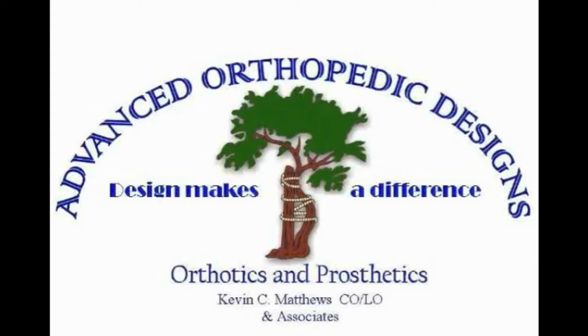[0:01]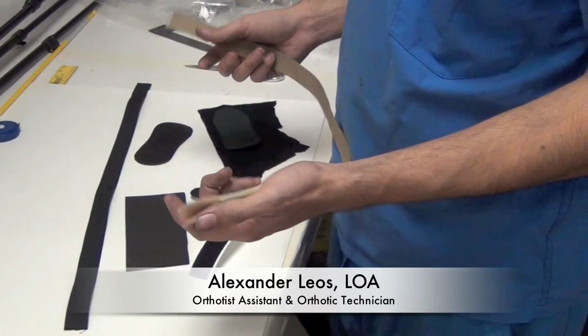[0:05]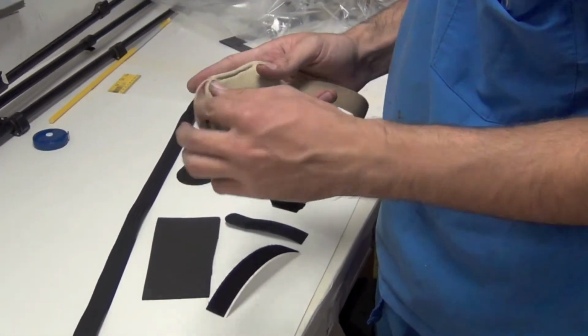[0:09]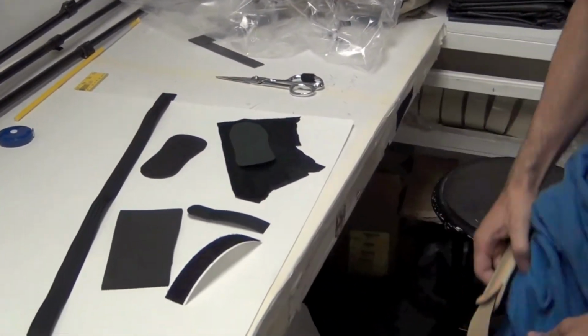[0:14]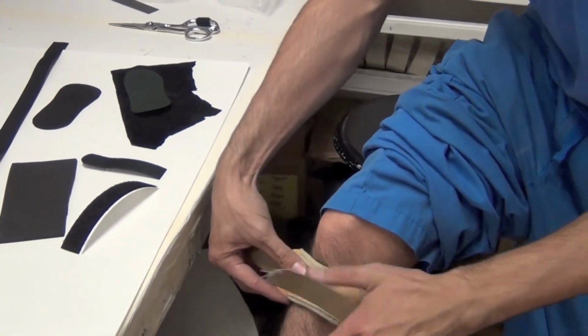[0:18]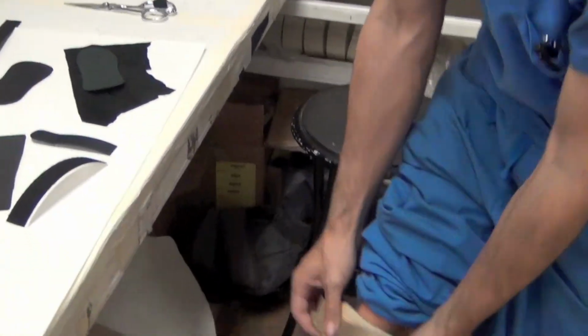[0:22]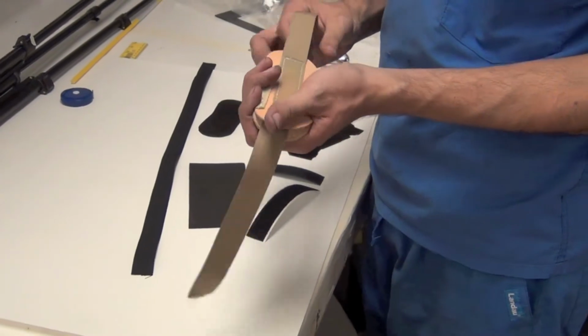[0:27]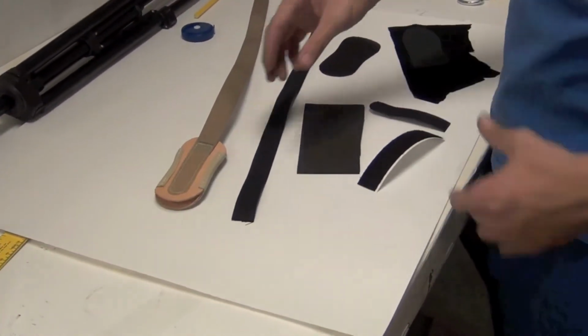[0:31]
This is an infrapatellar strap, which is pretty much what it sounds like. The patient will wear it under their knee, pretty much like that, and it'll wrap around the bars of the uprights, just to hold them in place. We use this instead of a knee strap, like somebody else might use a 4-pull or a 5-pull knee, big knee pad strap thing.
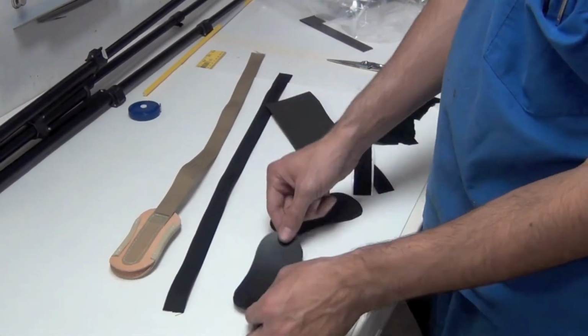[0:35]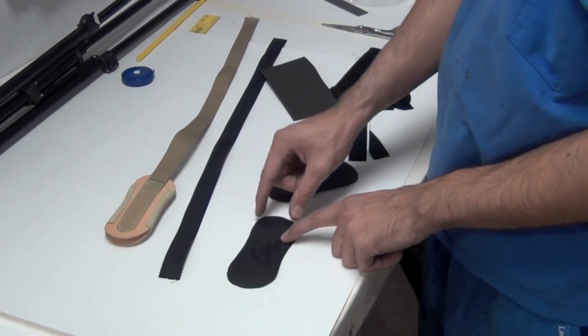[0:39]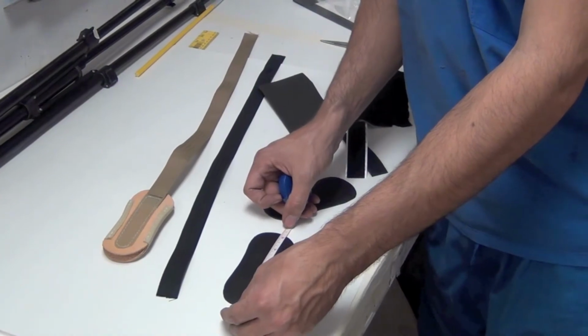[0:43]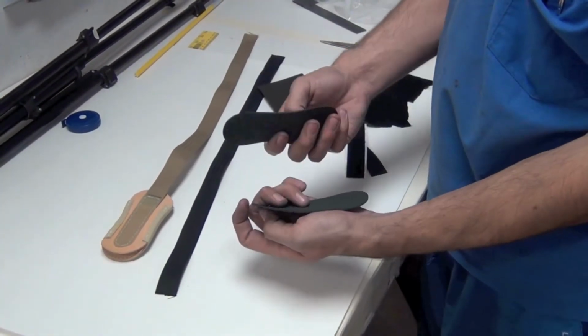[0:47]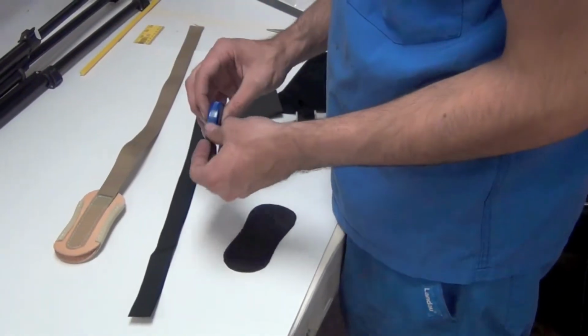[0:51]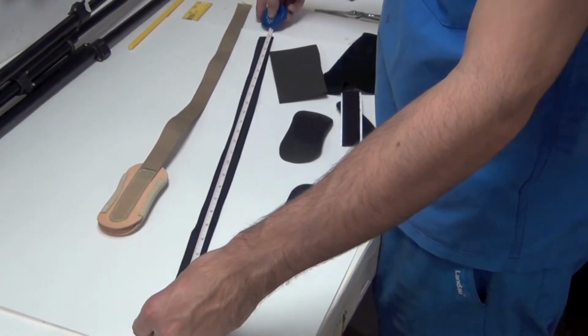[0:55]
I have a pattern for this, but this is the basic shape of it. And the pediatric ones are a little smaller, but this is the adult one. This is about 2.25 by 5.25. And I cut two of them out of just elk leather. I've got a piece of Dacron, it's about 25 inches long. And that should be long enough for pretty much anybody, your average patient.
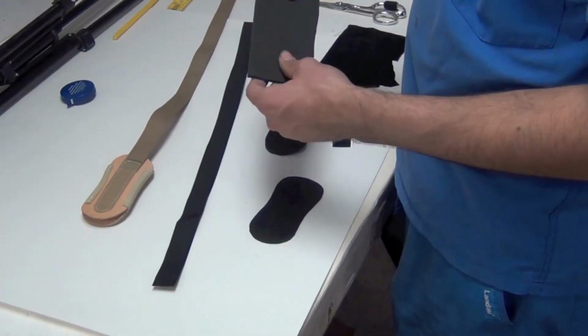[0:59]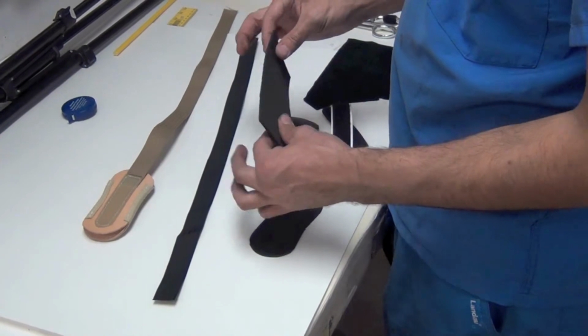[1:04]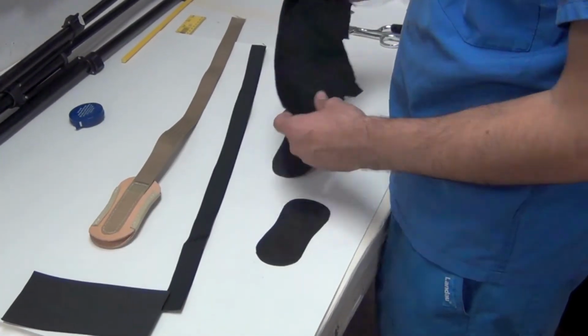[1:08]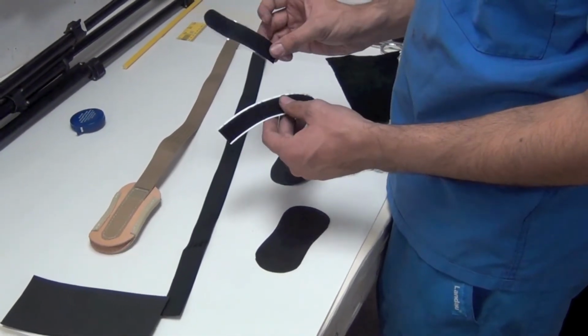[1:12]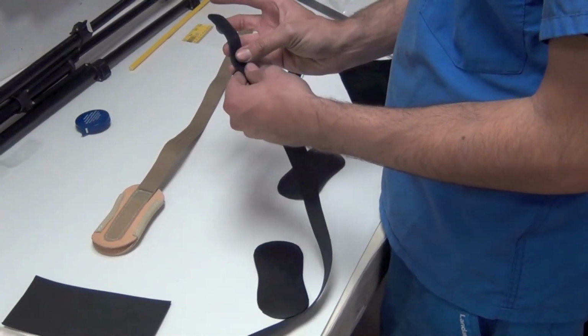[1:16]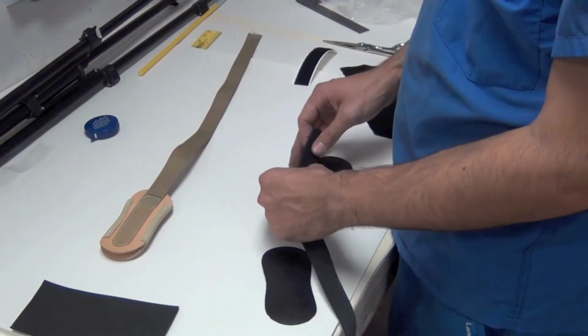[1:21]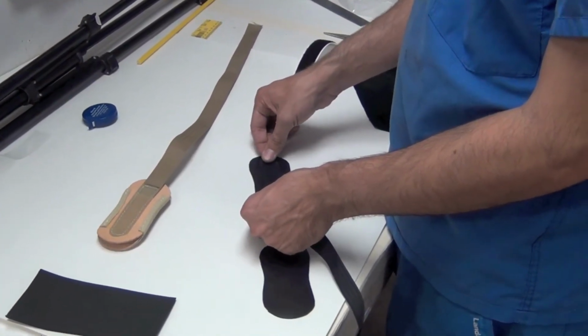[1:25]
I also have some 25 durometer EVA here, and that's 1/8 inch thick. I've got a piece of cowhide, some adhesive hook Velcro and loop Velcro. I'm gonna take the Dacron, put this hook on it, covering about 1 inch of it, and then I'm going to lay it right in the center of one of these, just like that.
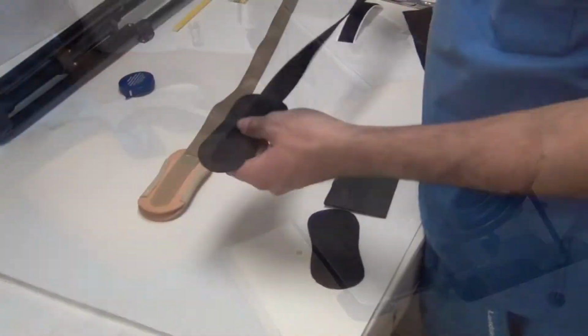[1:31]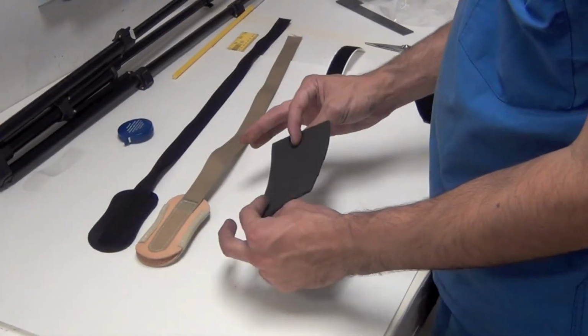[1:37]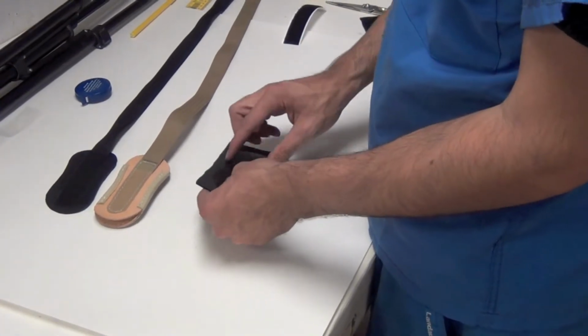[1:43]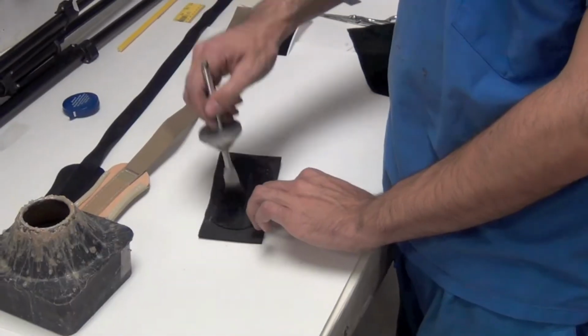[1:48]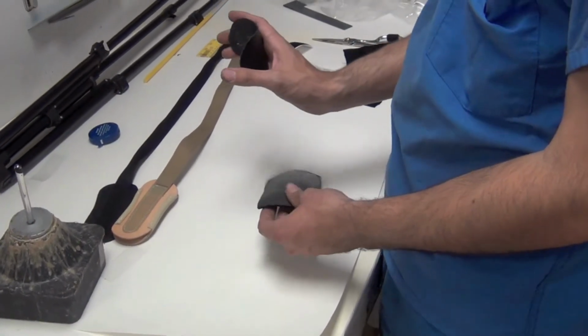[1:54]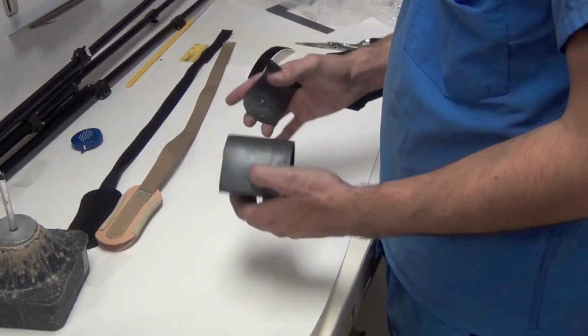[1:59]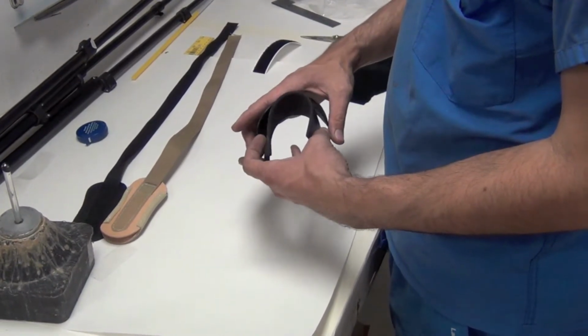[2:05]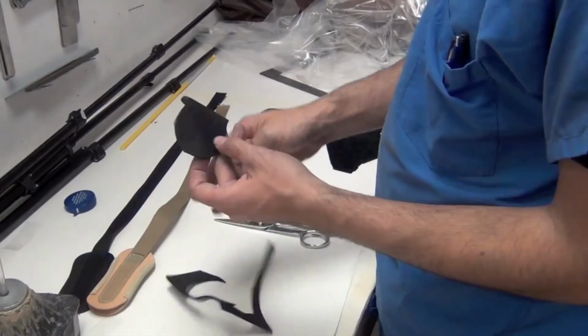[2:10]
So this is now sewed on here, exactly like the top of this other one that you can see. I'm gonna take this foam and I'm gonna glue this other leather piece straight onto that using some barge cement. This is gonna go against the leg, and so it's eventually gonna be curved, and so it's easier if you just curve it now when you're doing all of this. So just curve it, stick it to the PCL like that, and so cut all that off.
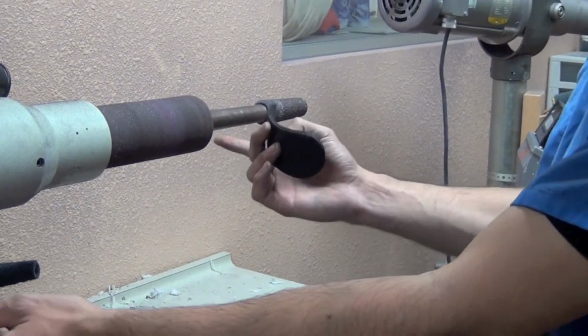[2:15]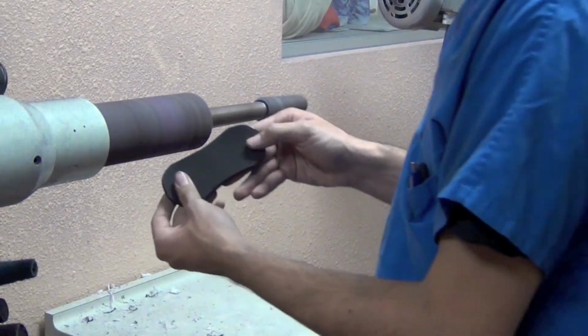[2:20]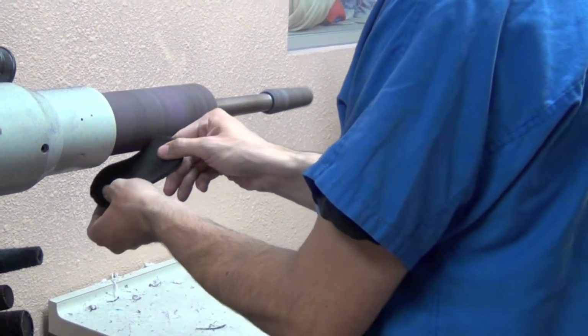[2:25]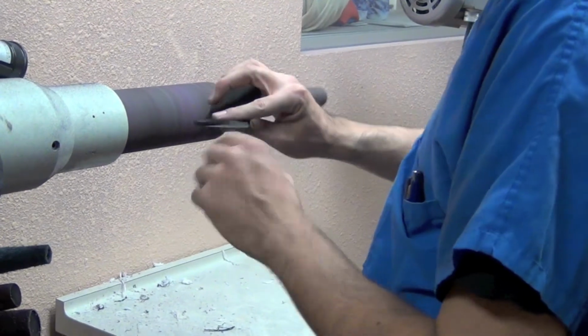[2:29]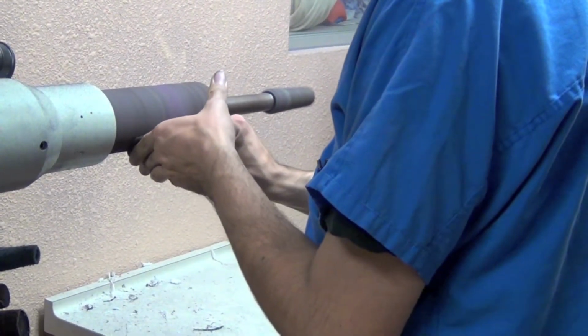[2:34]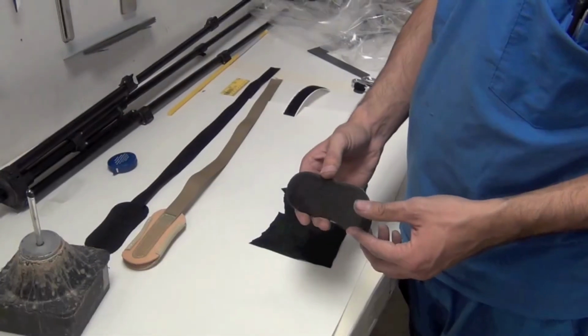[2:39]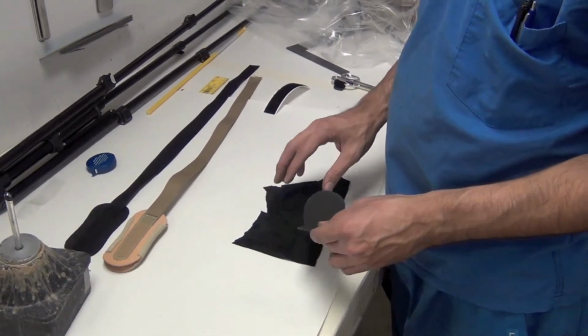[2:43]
No need to go sand this. When I do this, I'll just use any medium sort of grit sandpaper. On the sides, you just need to break the edges. But on the very end, you're going to want to get a deep skive. Now this is sanded. I'm just going to use the barge cement again to glue this to the cowhide.
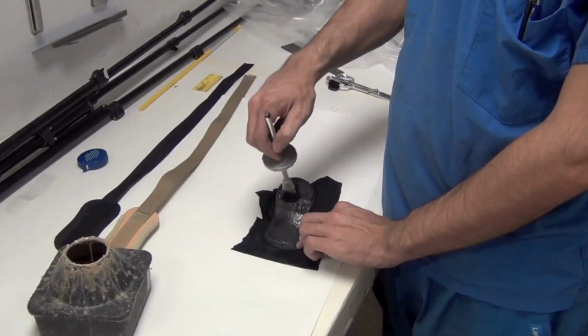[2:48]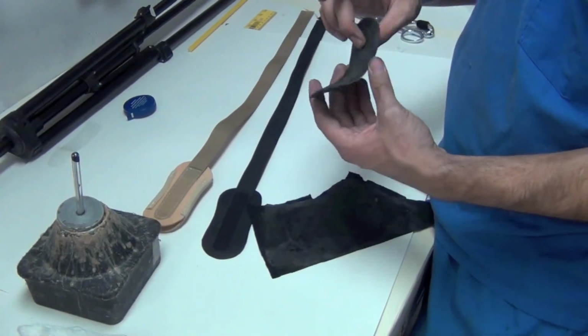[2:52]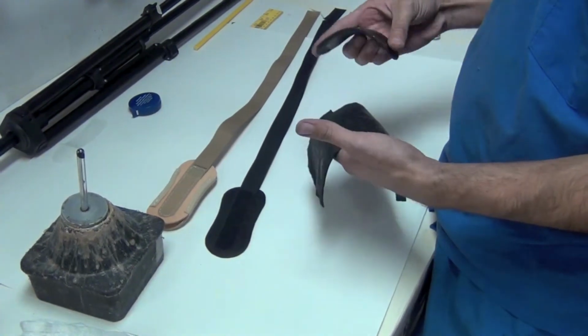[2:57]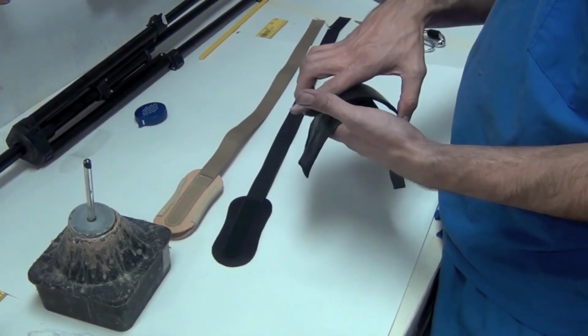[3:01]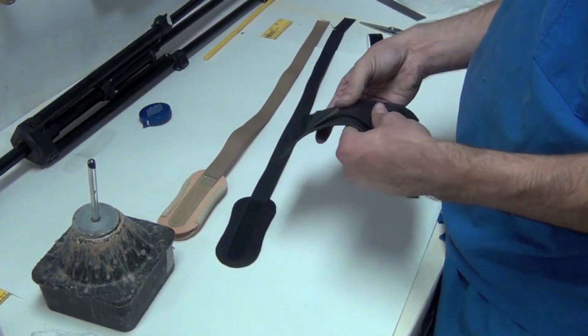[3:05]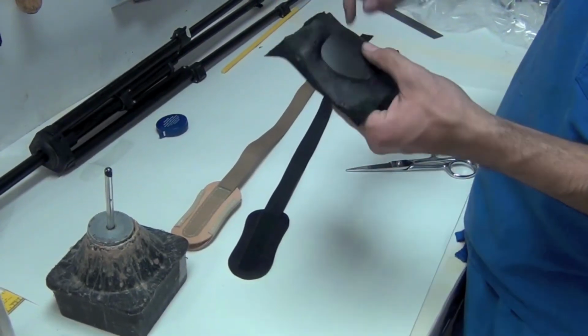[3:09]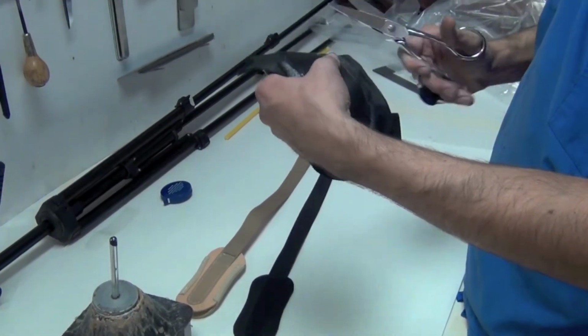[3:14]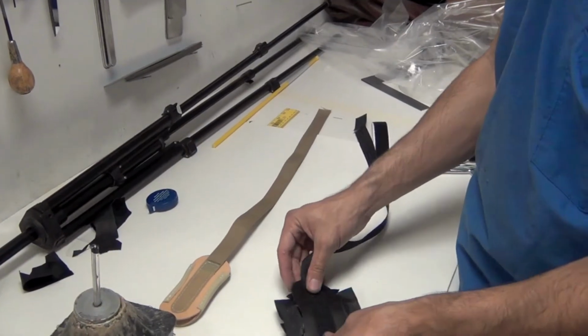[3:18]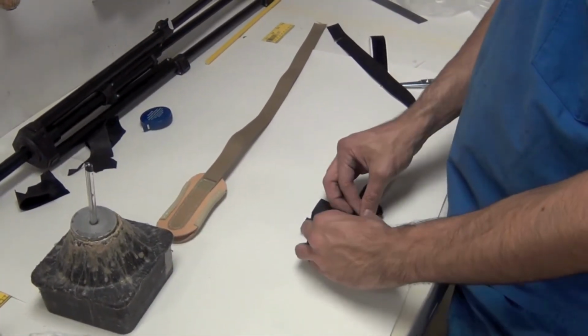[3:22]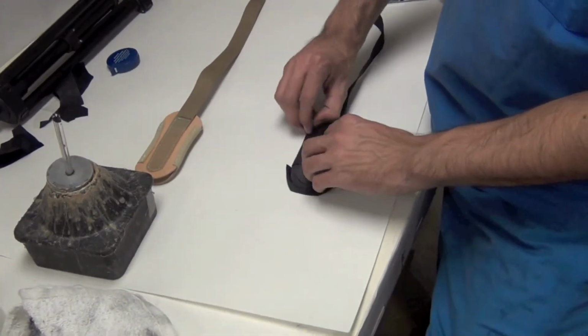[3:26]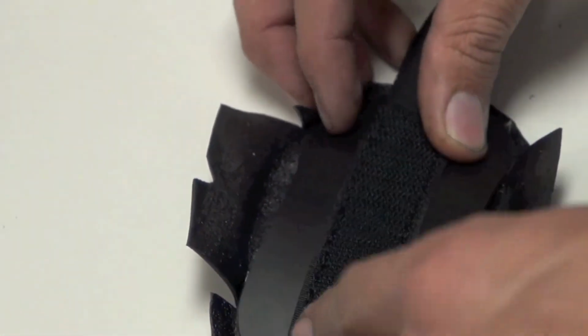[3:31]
Same thing as when I stuck this padding onto this leather. I'm just going to curve the leather, so that later on it'll get less wrinkles in it when it actually does curve like that on the patient's leg. At the end of each of these curves, I'm going to make a slit. What's about to happen is I'm just gonna set this on here and fold this leather over like that and then sew that. But I'm gonna put glue on this top piece so that when I fold that leather over, it'll actually hold.
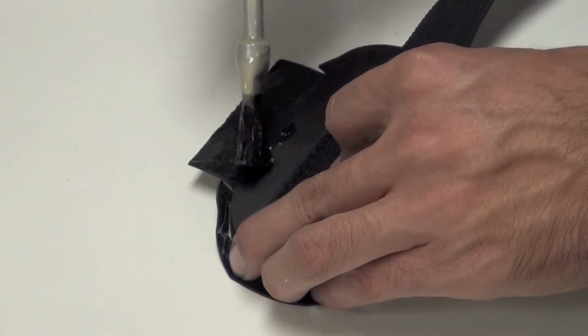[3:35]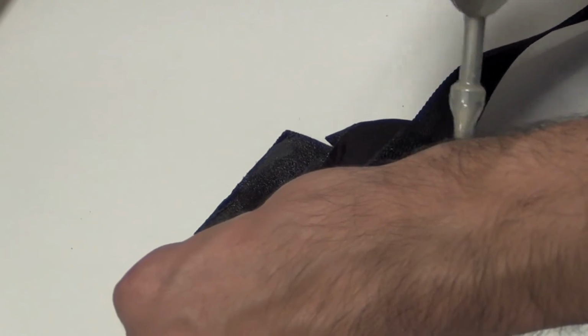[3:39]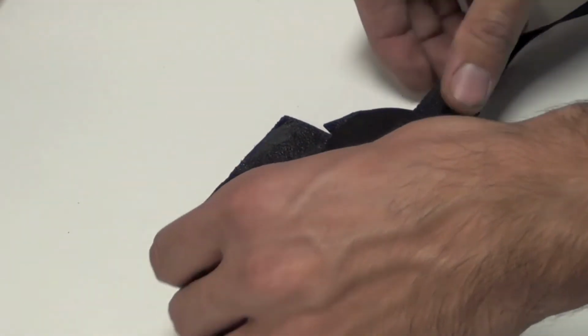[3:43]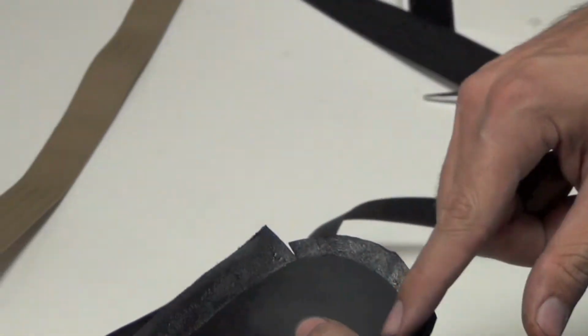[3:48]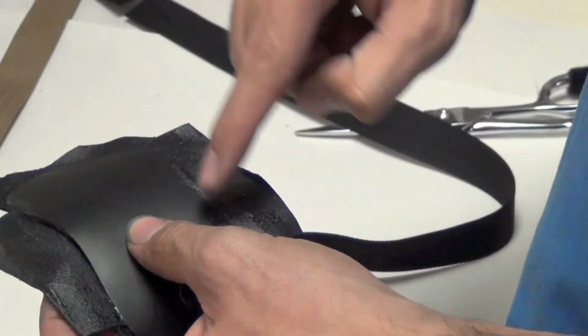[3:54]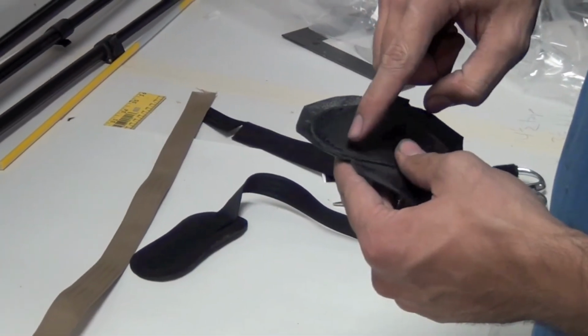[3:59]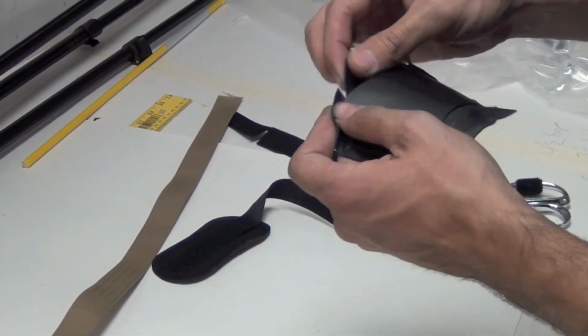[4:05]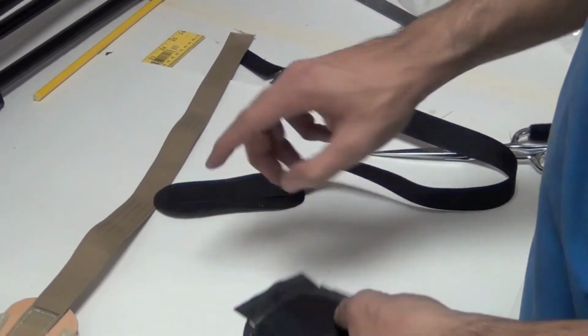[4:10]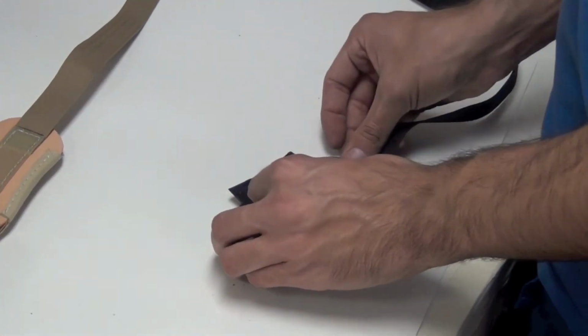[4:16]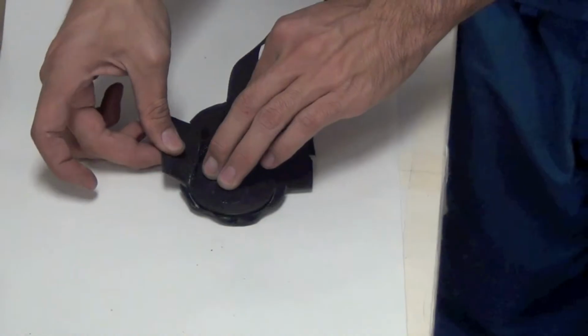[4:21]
And while that dries, I'm gonna go sew these ends. Everything, this whole curved end basically, everything except the edges. All right, so you can see I only sewed the edge up to the slit. Now, I already had glue here from before. I have glue on here now. I'm just gonna line this up the best that I can. Let's pull this cowhide tight and wrap it over.
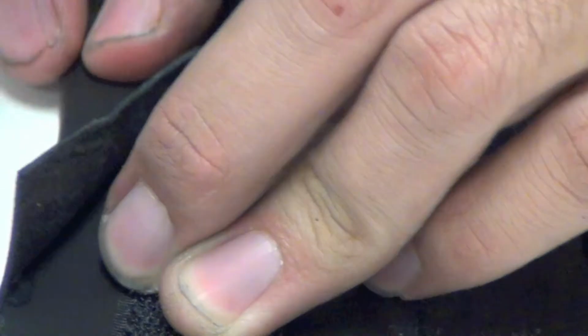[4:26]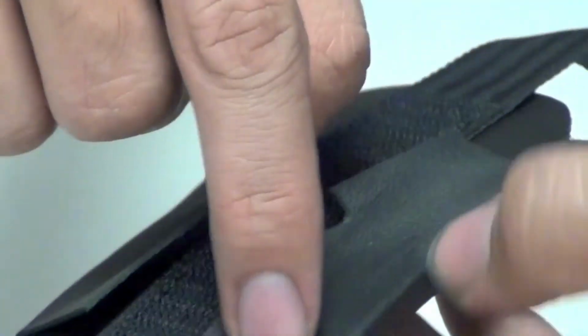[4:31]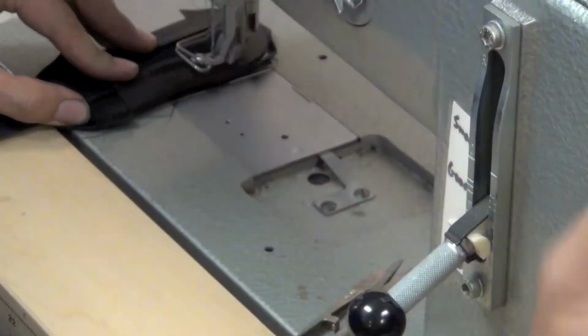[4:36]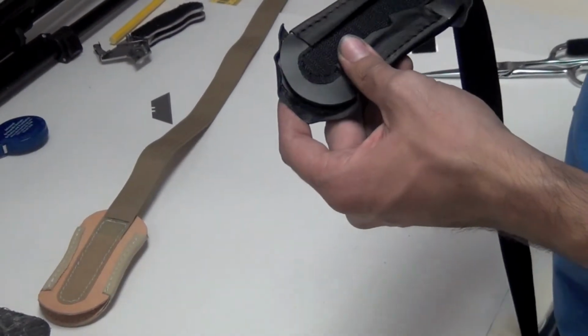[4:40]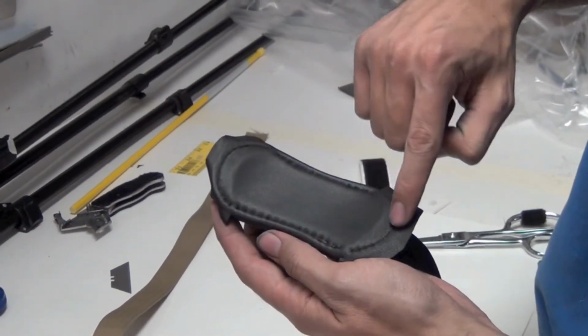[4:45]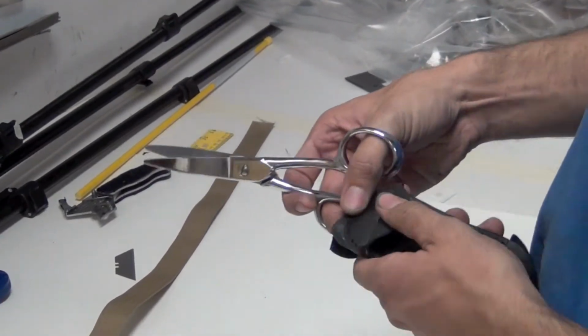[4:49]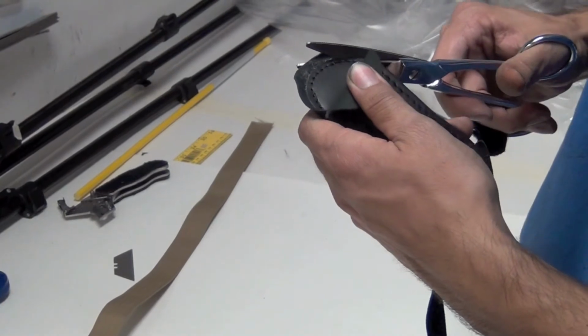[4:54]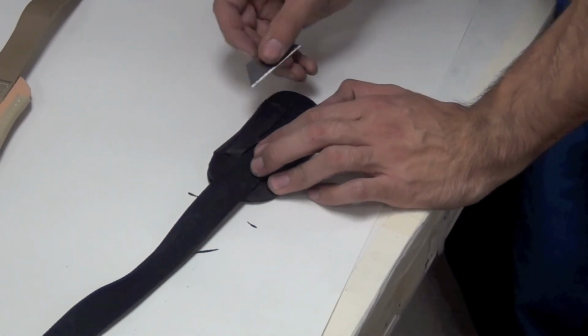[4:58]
Now, this whole area that I didn't sew before, I'm gonna go sew. So you can see what I just sewed now. If you look on the back end, it should pretty much be sewed the entire way around. And now I'm gonna trim off my extra cowhide. Now I'm gonna take a razor blade and trim this edge here.
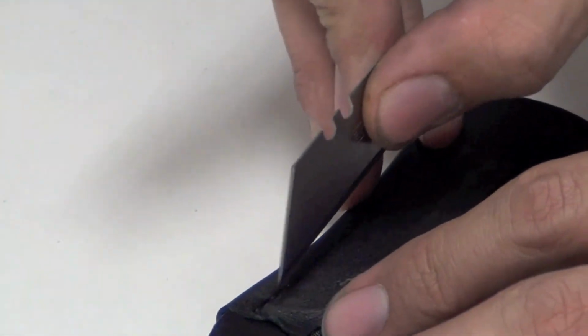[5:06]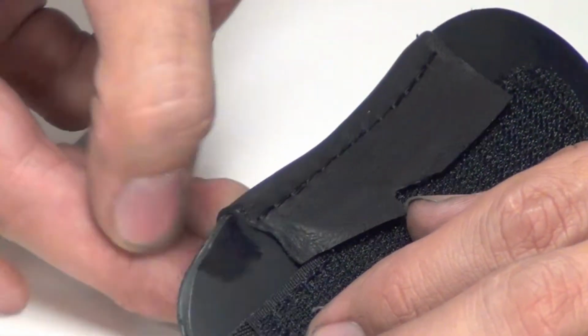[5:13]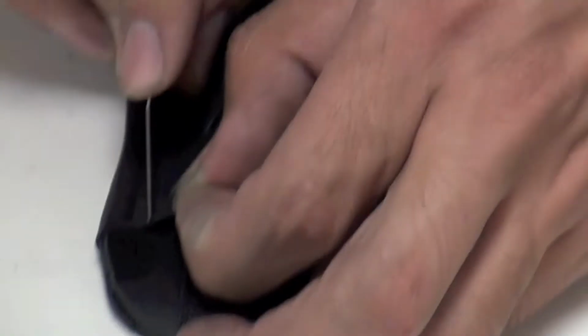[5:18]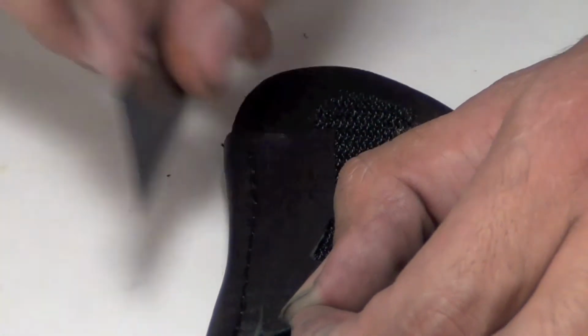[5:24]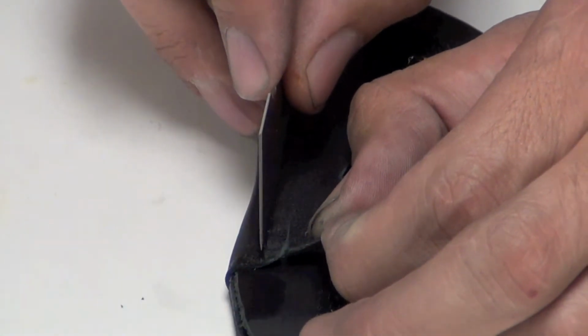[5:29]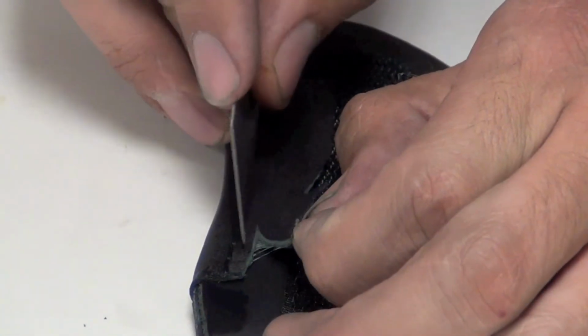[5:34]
When you're doing this, I would use a pretty sharp razor blade and just don't push very deep. It's all right if you have to make a couple of passes to cut through, but you just don't want to push really deep and cut a lot through the leather underneath. And generally, whatever my distance between my stitches and the edge is, I just sort of double that, and so I match the distance coming out here, just so that it looks even.
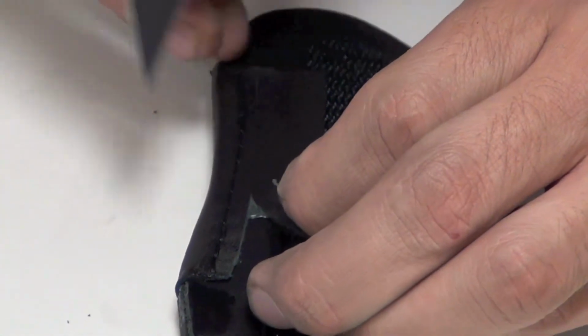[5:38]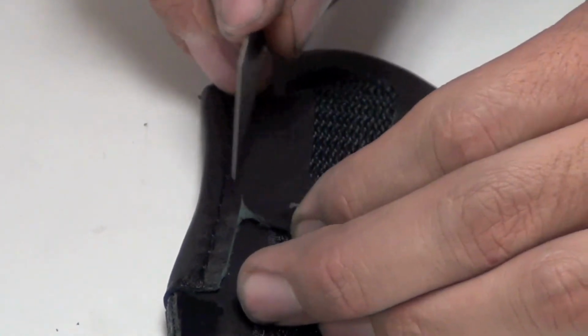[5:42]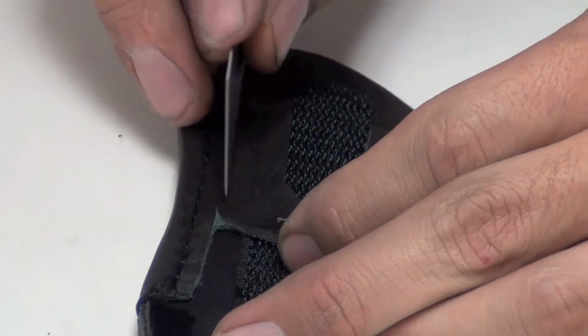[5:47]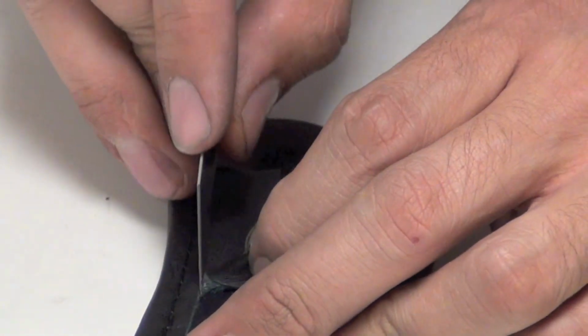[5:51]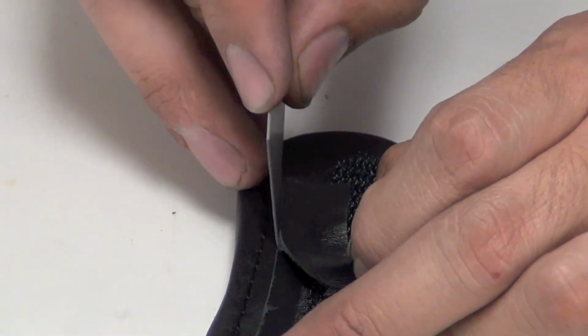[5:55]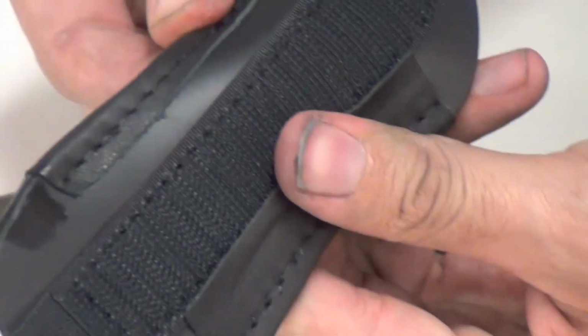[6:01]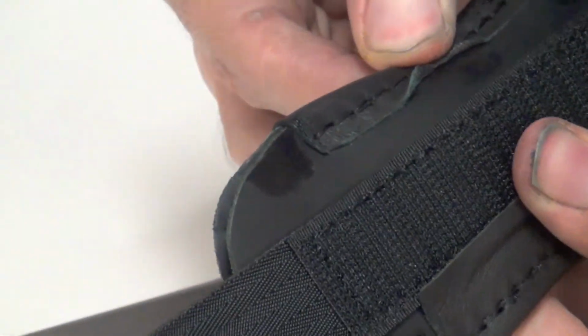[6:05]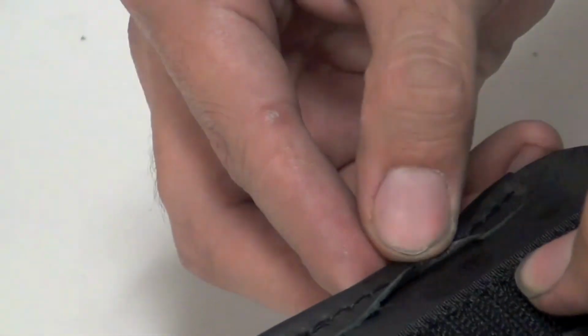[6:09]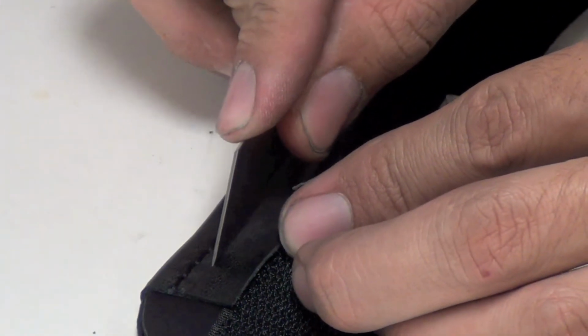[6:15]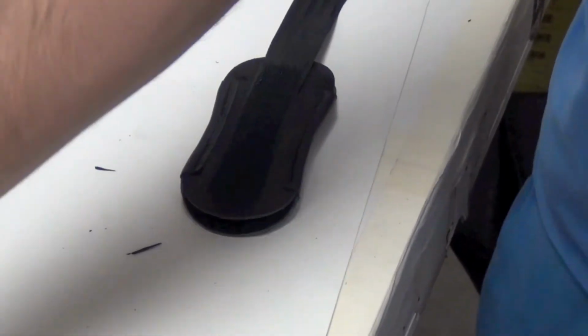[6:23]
And you can see that I just barely scored it, so I'm pulling on it, and it's sort of tearing this apart. It's not actually a clean cut, because I didn't cut all the way through. And that's good. Now I can just go back and do this, and the leather underneath will barely even be scored. And you should just check your leather before you send it out. Part of it isn't even cut, and what is, is just scratched. It's not actually deep. You don't want to send out a bad strap. And let's clean it up. This is barge thinner.
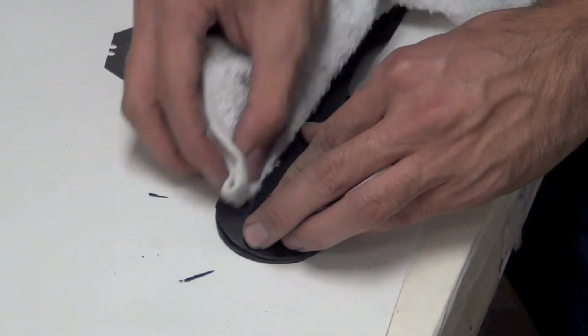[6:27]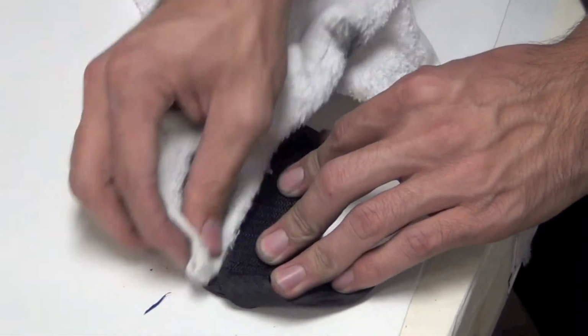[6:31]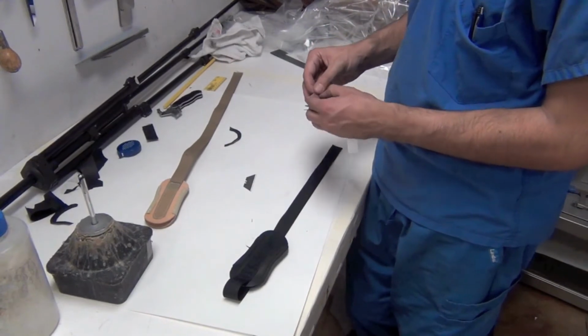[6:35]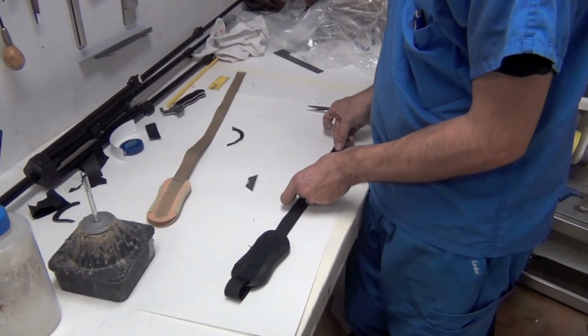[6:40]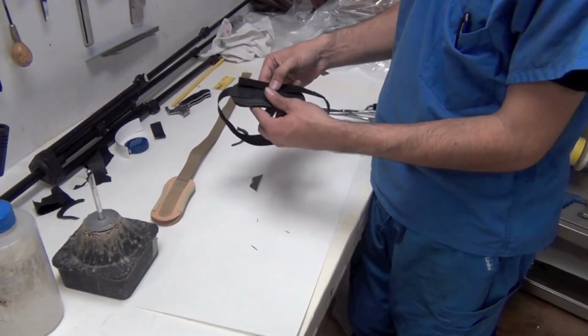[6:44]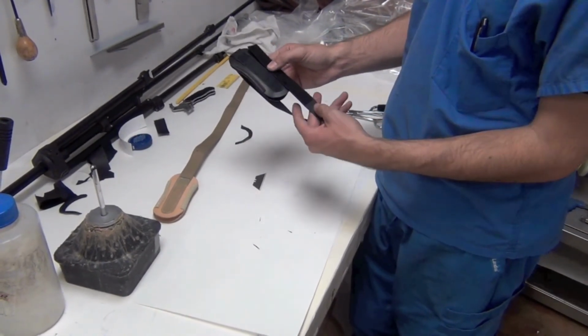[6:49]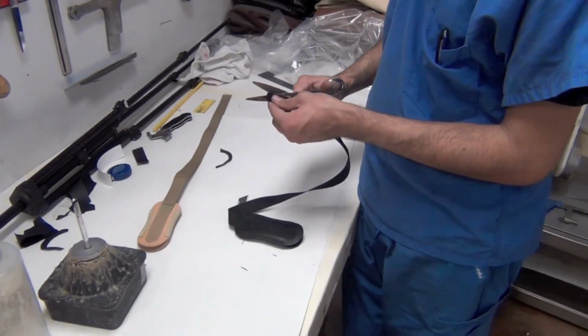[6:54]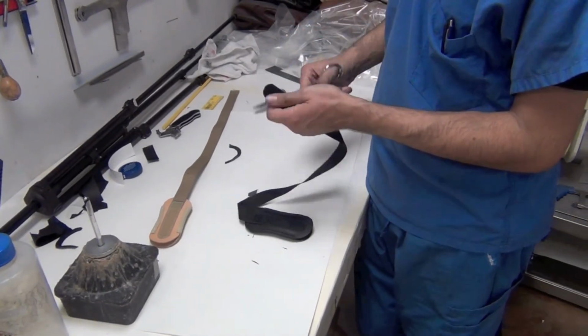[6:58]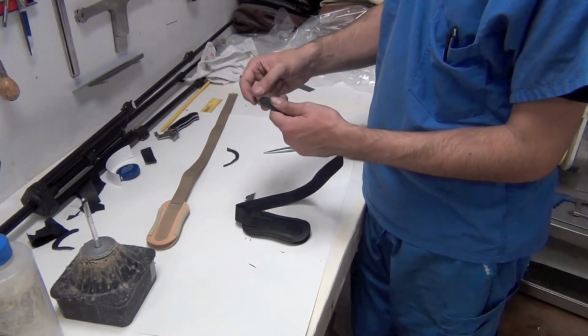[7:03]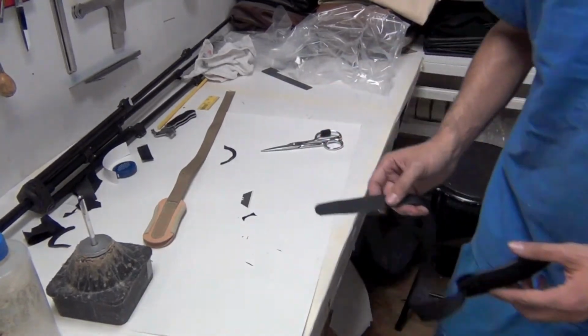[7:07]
And then add some loop to the closure system. And I always make my loop extra long. As you can see here, it's about 1.5 inches longer than the hook is. And I'm just going to sew a few cutoffs here, so that when the practitioner's in the room, they can just trim it while they're in the room. I'll have to burn the edges because Dacron will unravel, but it'll make it a lot faster of a process.
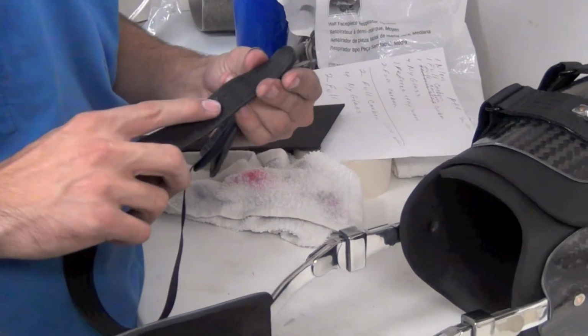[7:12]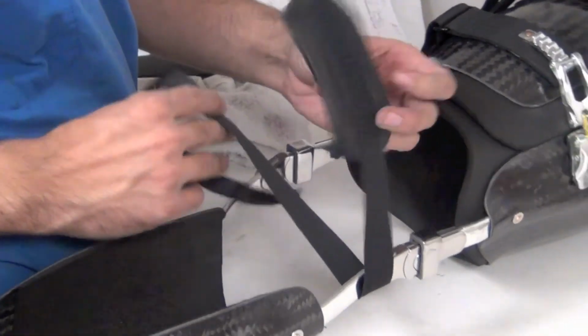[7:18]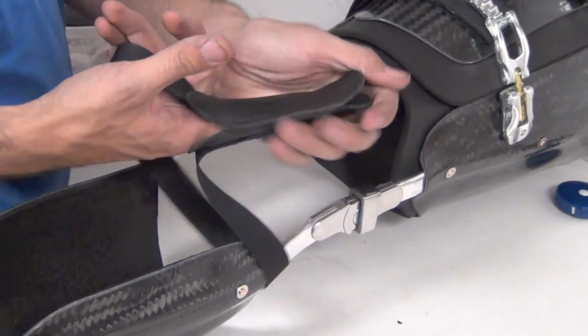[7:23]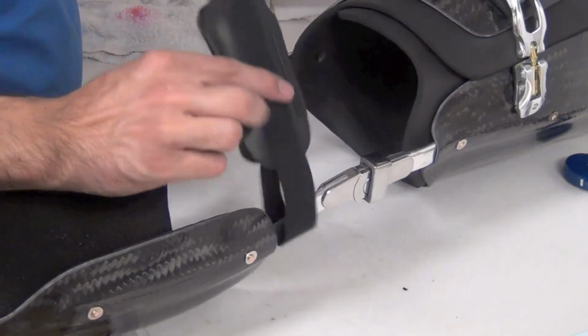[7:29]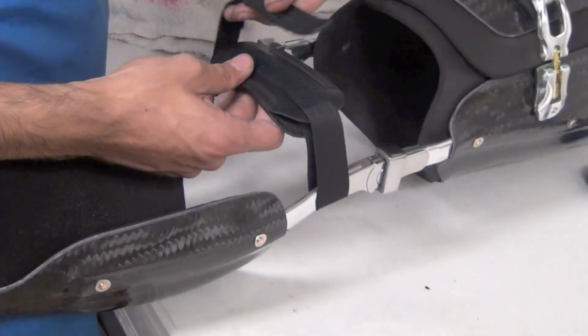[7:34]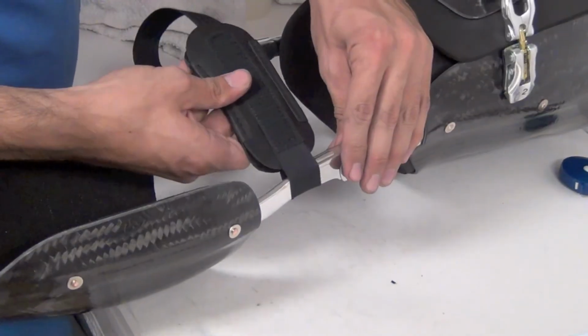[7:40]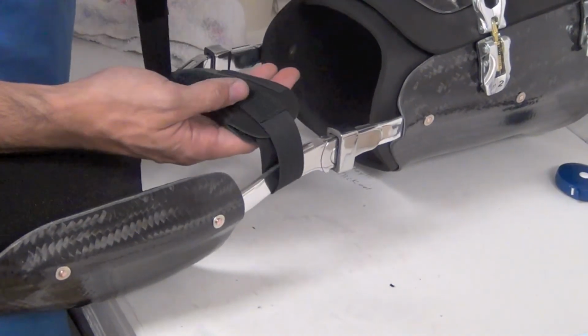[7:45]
So this is the complete infrapatellar strap, and you can see the cutoffs I sewed on there. And this is how you put it on. I always wrap it around the lateral upright. Stick this through the center. You could use a pen or something if you have to, but finger usually just works. And it'll wrap around the back of the other upright and back onto itself just like that. And it can slide in either direction. See, so it's adjustable in that way. And that's about it for that.